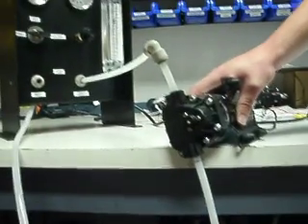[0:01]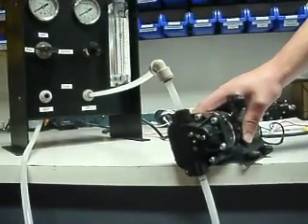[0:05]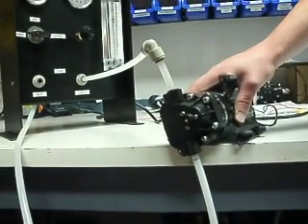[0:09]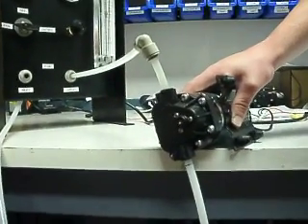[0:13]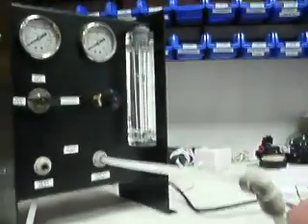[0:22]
One thing we have noticed is one possibility that we need to explore is the incorrect insertion of the tubing. In this case, we're showing the same pump that is producing 5 liters per minute plus with no issues. You see no bubbles in the flow meter coming.
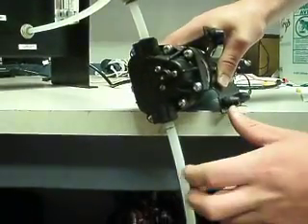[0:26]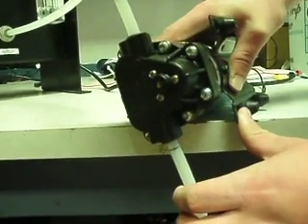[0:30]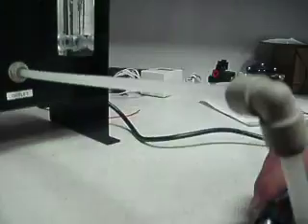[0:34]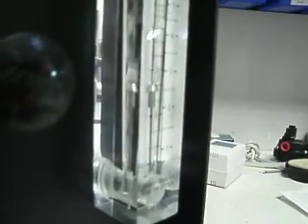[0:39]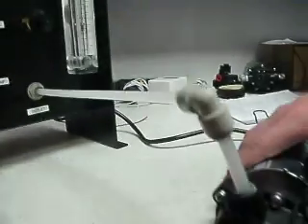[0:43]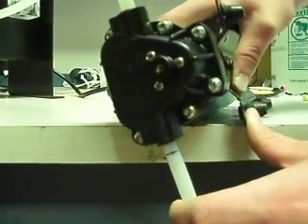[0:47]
But if the tubing is just slightly side-loaded, as soon as you have a side load, the pump is now sucking in air. You can see the air now introduced into the flow meter, and the flow has reduced to about 2.5 liters per minute. By side loading, you can see it does take a little bit of side loading, but not really too much to be able to introduce air into the fitting.
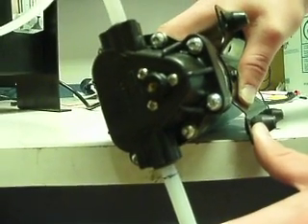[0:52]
Now that we've taken away the side loading, there's no more air being sucked in, and the flow meter quickly went back to 5 liters per minute.
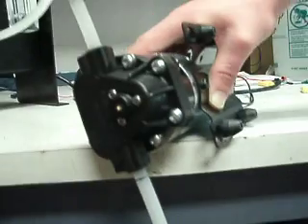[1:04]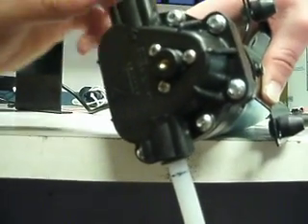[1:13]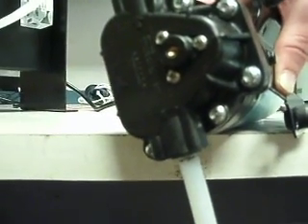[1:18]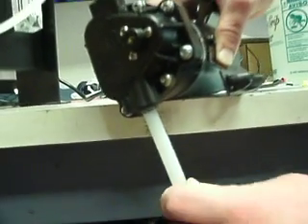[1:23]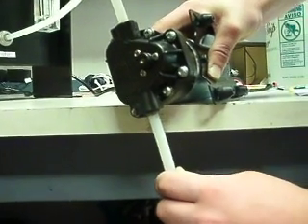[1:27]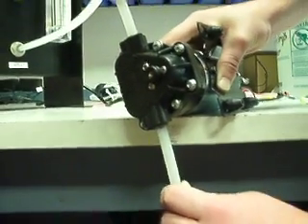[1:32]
The other thing we're showing in this video is this black line right here. That's how far the tubing should be inserted into the pump to have a complete installation. We push it basically all the way in, and now even with some side loading, as we try to move the tubing around, we are not able to make the fitting, the O-ring, move and the pump suck in air. You can see the flow is steady at plus 5 liters per minute.
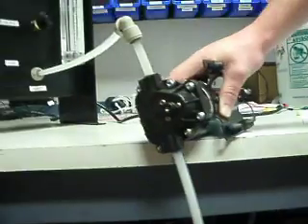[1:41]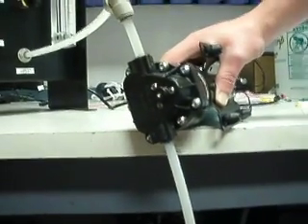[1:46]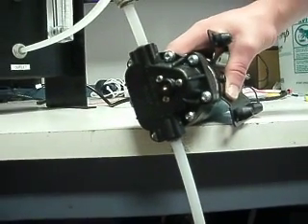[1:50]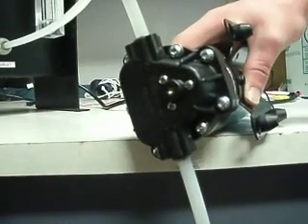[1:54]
So the point of this section of the video is, if the tubing is not completely inserted into the pump, some side loading of the tubing will cause the O-ring to not seal properly and the pump to suck in air.